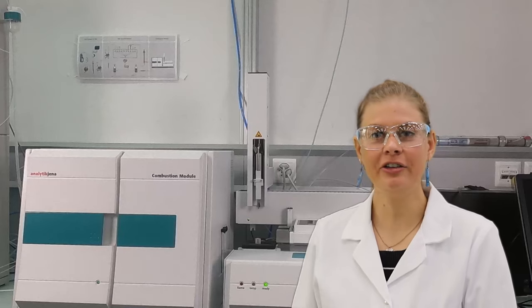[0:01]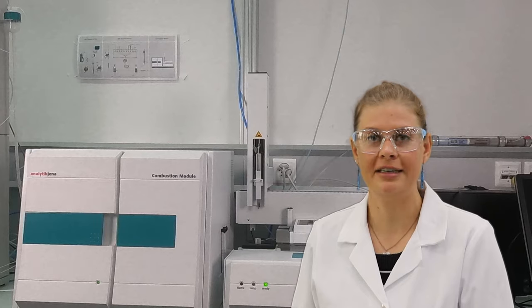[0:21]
The combustion tube of your combustion IC system is essential for the proper functioning of this sample preparation technique. Aggressive samples can attack or even destroy the combustion tube. Also, incomplete combustion of your sample can lead to contamination of the system. These reasons can make the exchange of the combustion tube necessary.
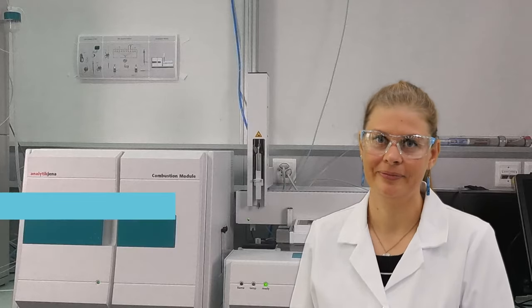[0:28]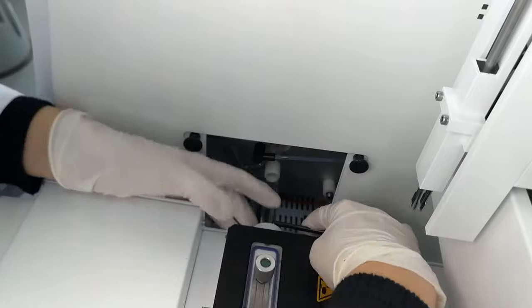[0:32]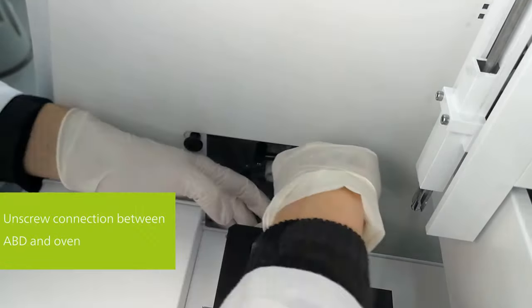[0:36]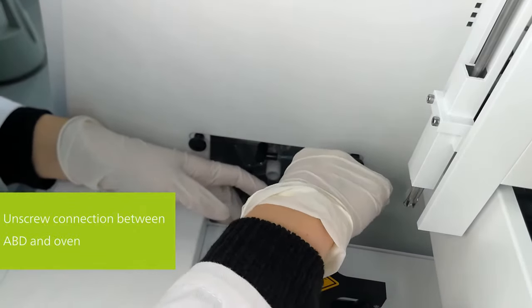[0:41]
Hi, my name is Iris Rieber, and in this video I will show you how this is done. Before you remove the combustion tube, make sure the oven has cooled down. In a first step, loosen the screw connection between the autoboat drive, ABD, and the combustion tube using the adjustable pin wrench.
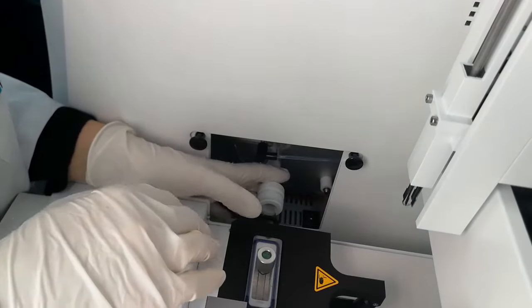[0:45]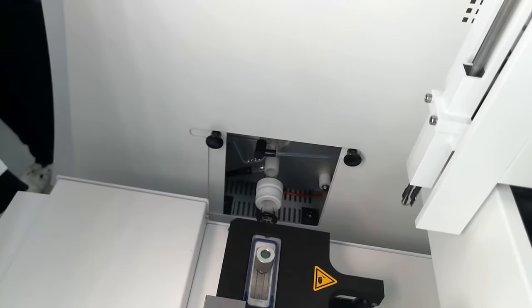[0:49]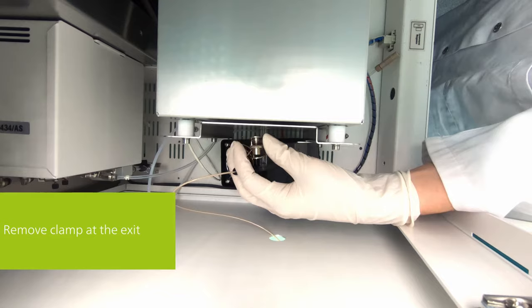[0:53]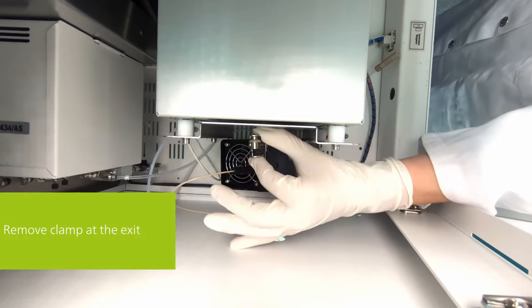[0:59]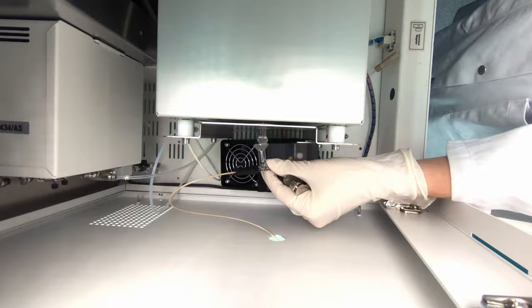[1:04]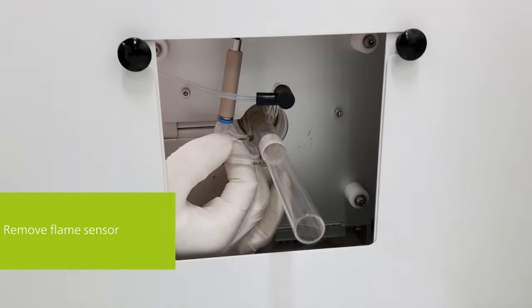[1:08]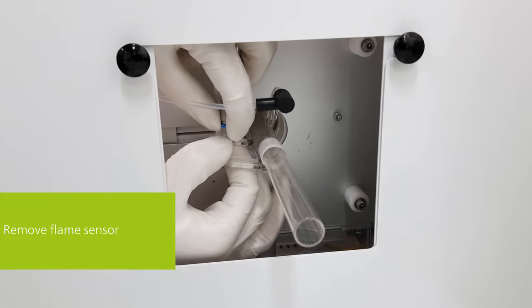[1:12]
In a second step, remove the clamp at the exit of the combustion tube and separate the ball joints of the tube with the cool T-connector. In a third step, remove the connections for the water, carrier gas, as well as the flame sensor. Here, you need to be careful to stabilize the fragile quartz parts.
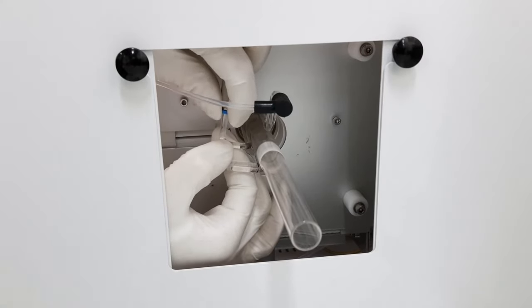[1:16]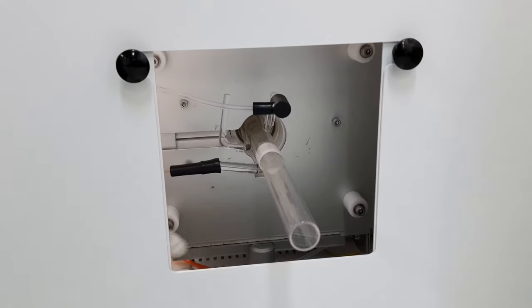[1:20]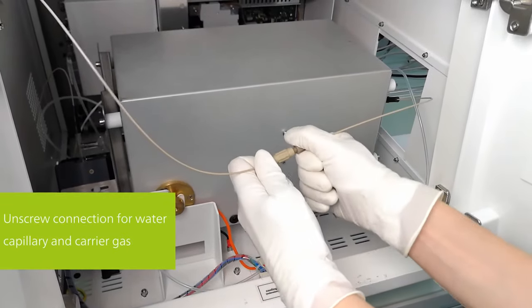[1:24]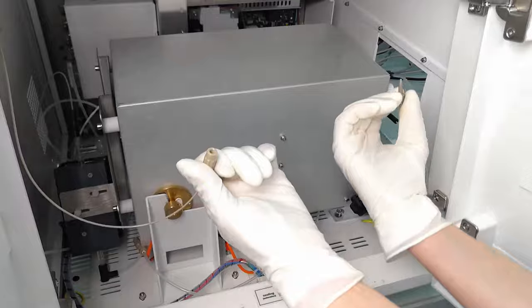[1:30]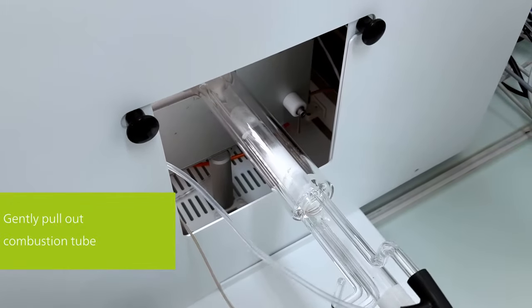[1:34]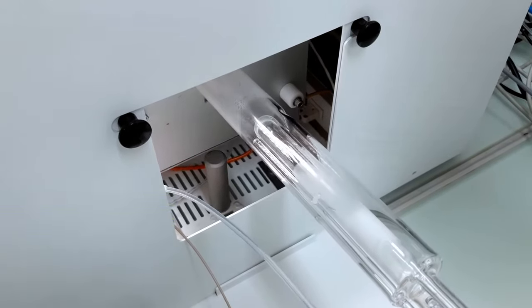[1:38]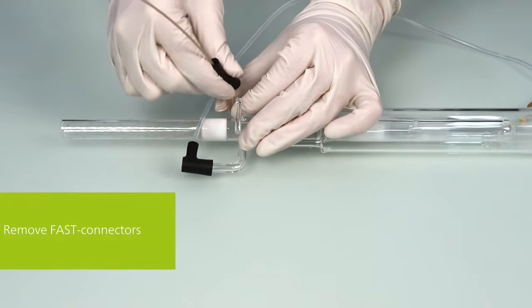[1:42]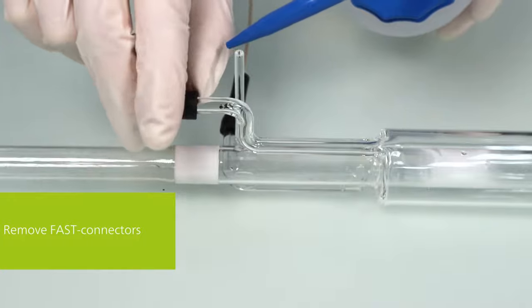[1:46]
In order to minimize the risk of breaking off the quartz connections, we recommend using couplings at the oxygen tube as well as at the water inlet capillary. This way, you can easily remove the combustion tube completely from the oven before you even have to manipulate the fast connectors. Now you can remove the fast connectors outside the oven without any space constraints. If you have trouble removing the fast connectors, you can use some water to help with the removal.
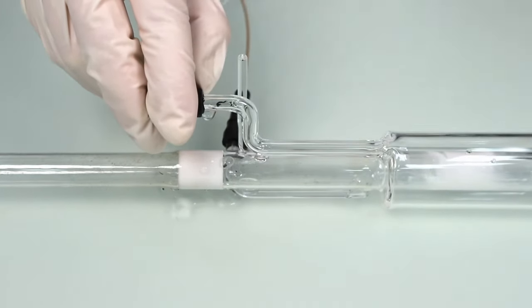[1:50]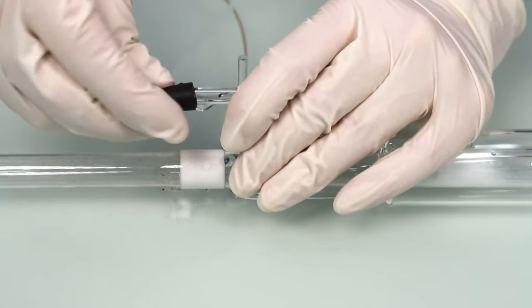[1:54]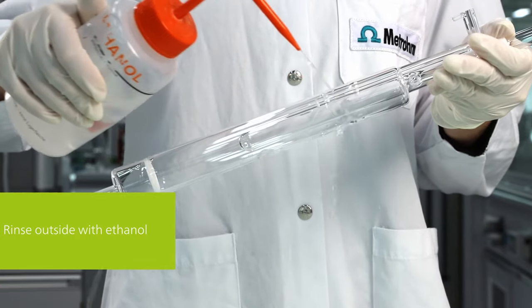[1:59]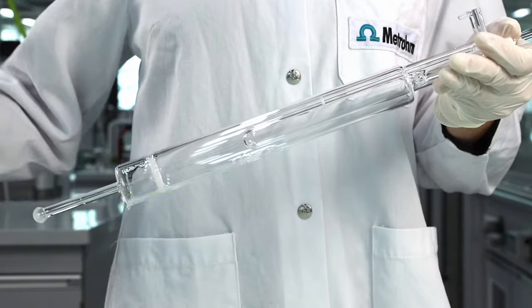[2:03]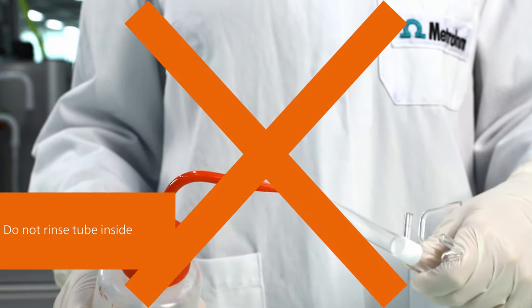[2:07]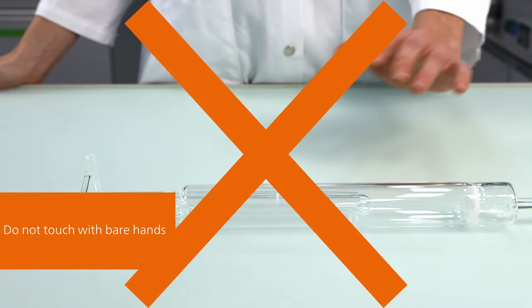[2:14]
Prepare the new combustion tube by cleaning it with ethanol on the outside. Be careful to never rinse the interior with any type of alcohol, as the frit inside the tube absorbs the liquid and is then likely to explode when heated up. When handling the new combustion tube, always wear gloves. Touching the combustion tube with your bare hands will contaminate the new tube.
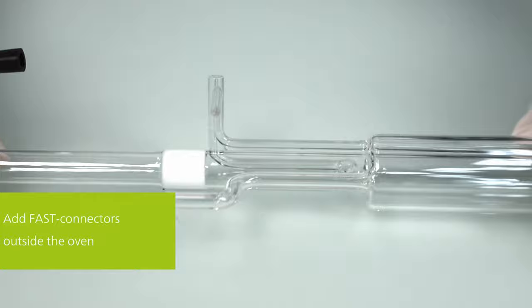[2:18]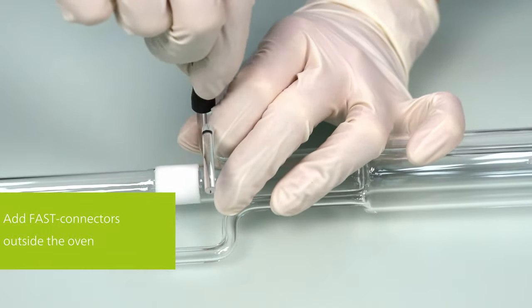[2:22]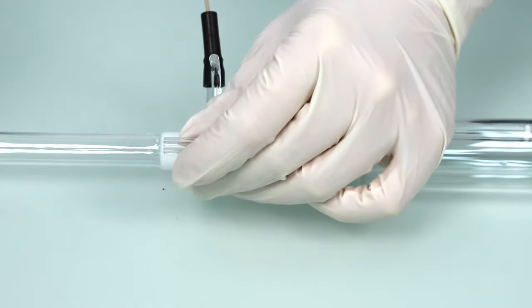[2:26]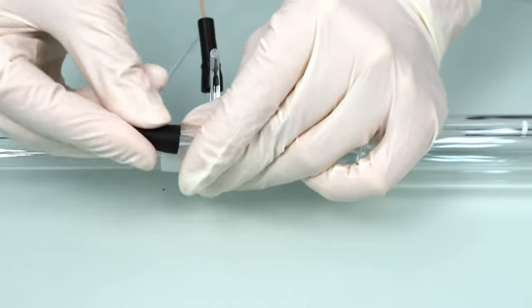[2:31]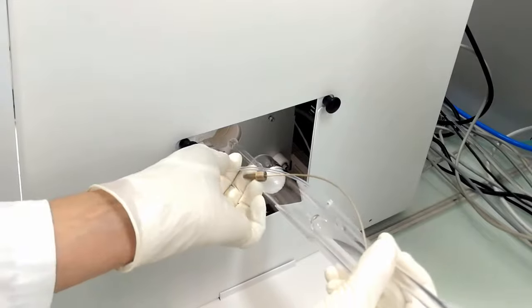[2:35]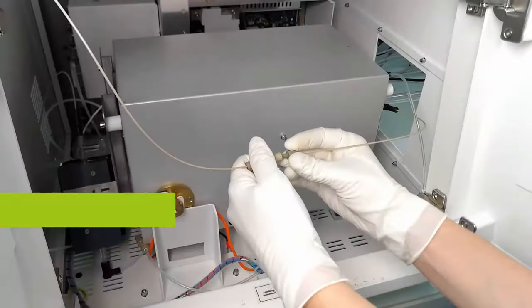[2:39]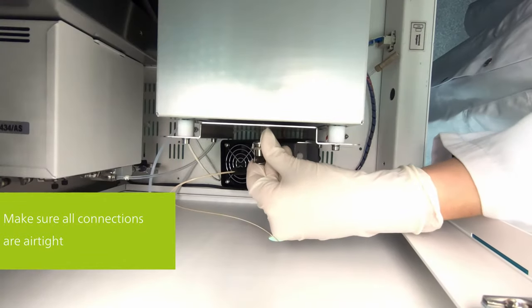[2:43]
In order to avoid breaking the connections of the combustion tube, we recommend adding the fast connectors outside the combustion oven. That way, you only have to connect the coupling after inserting the tube and can again handle the critical connections beforehand. Gently push the prepared combustion tube into the oven compartment. Then reconnect the different couplings. Make sure that all connections are gas tight.
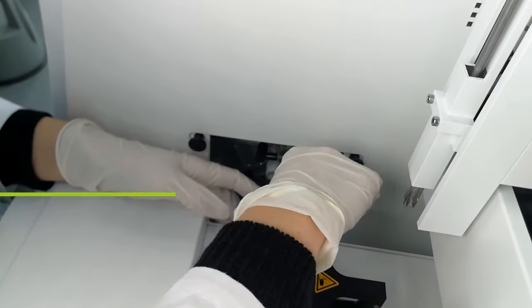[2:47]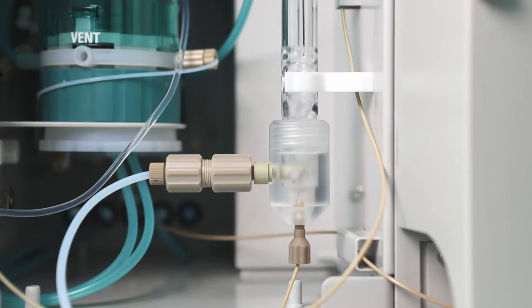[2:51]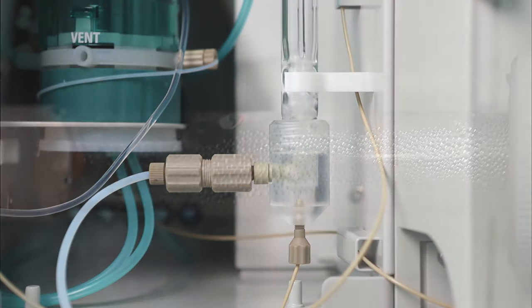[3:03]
You can easily check if the system is gas tight by looking at the collection vessel. If you see gas bubbles after having started the gas flows, the system is tight. If not, check again all connections. Condensation at the tube inlet points to a gas leak at the sample sluice. Please check the connections there.
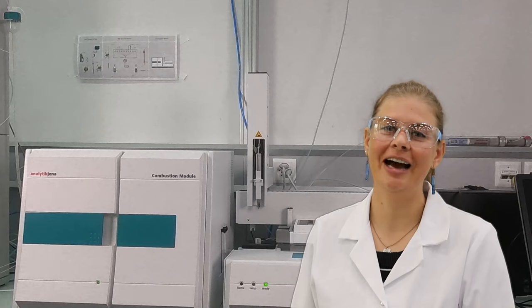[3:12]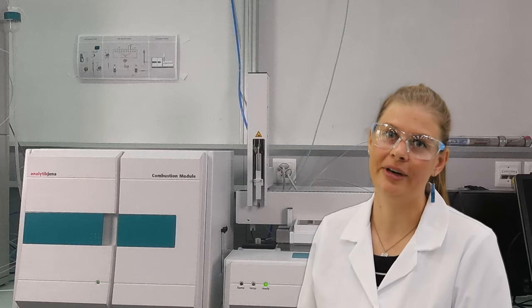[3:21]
You're probably wondering how often you should exchange the combustion tube. There is no definite answer to this question, as it depends on your samples and on the number of analyses you run. Performance of your combustion system is verified by analyzing certified reference materials. As long as the recovery is within the set specifications, there is no need to exchange the combustion tube. When the recoveries of all analytes in the CRM are out of range, you will need to investigate and possibly exchange the tube.